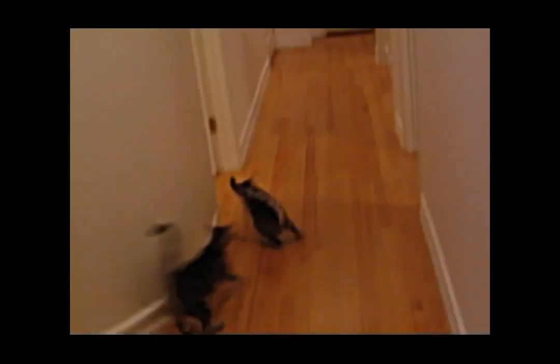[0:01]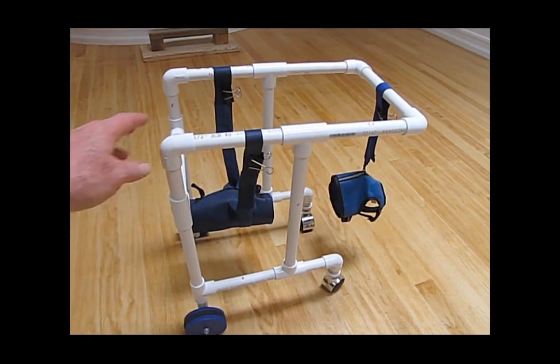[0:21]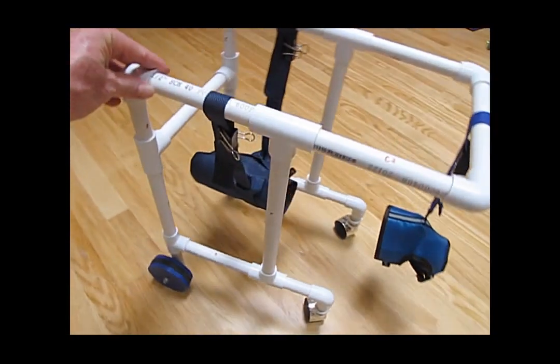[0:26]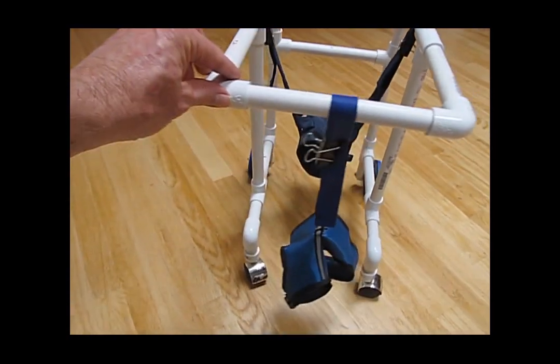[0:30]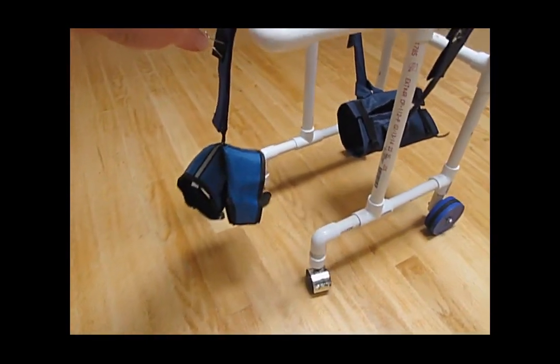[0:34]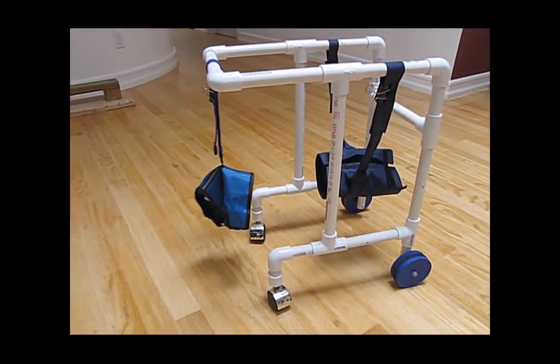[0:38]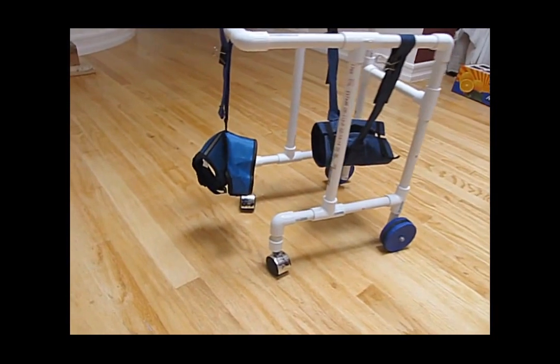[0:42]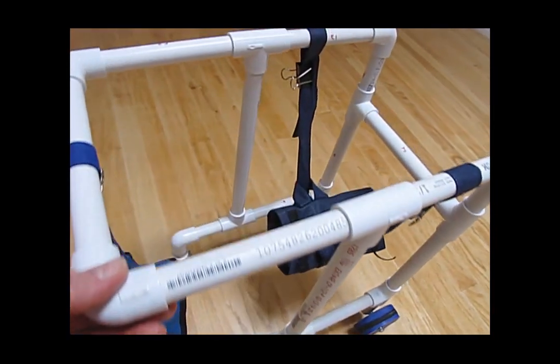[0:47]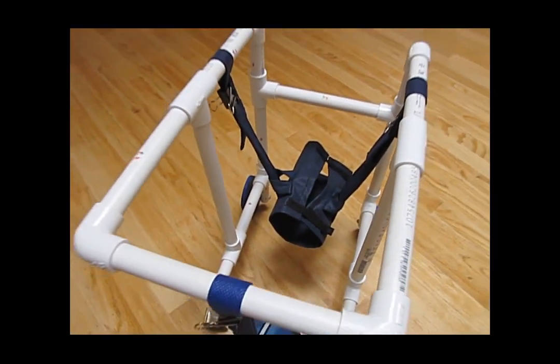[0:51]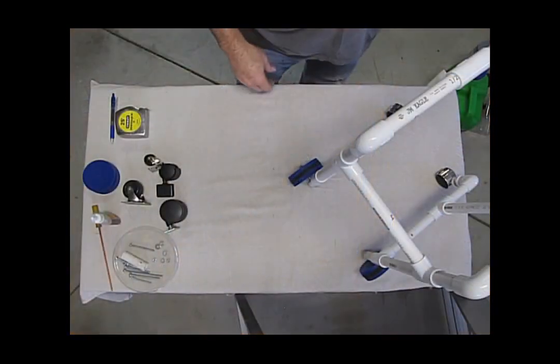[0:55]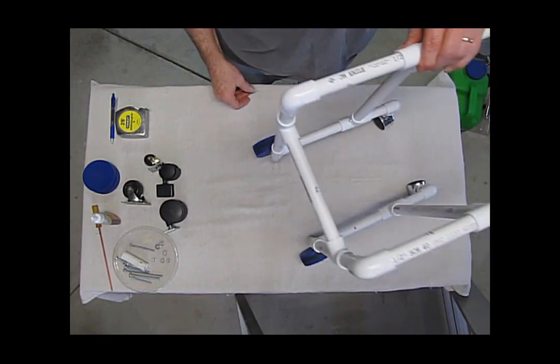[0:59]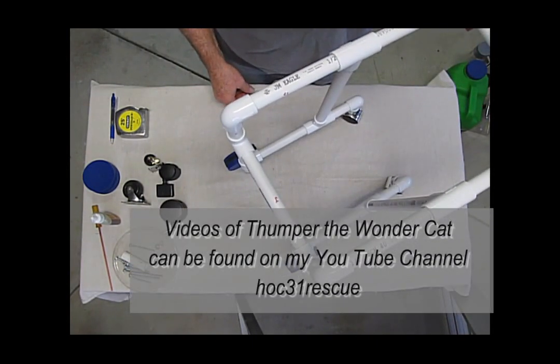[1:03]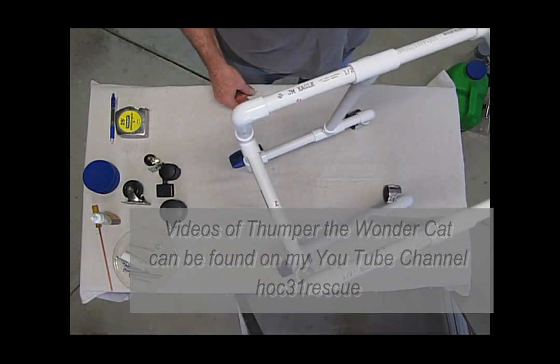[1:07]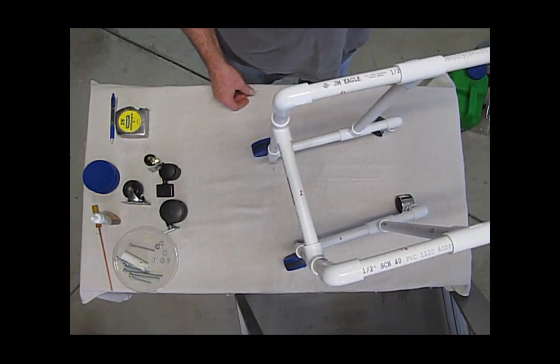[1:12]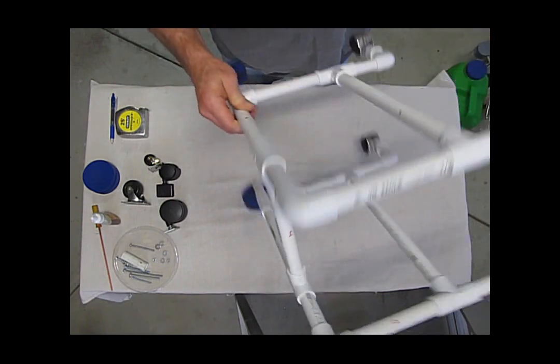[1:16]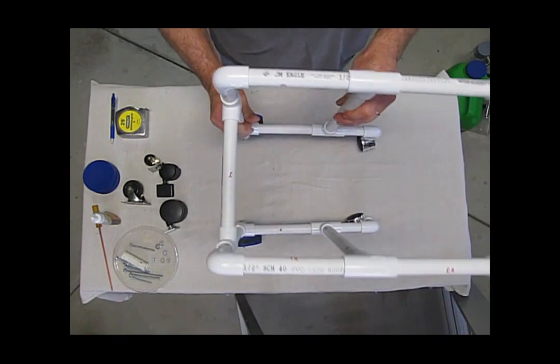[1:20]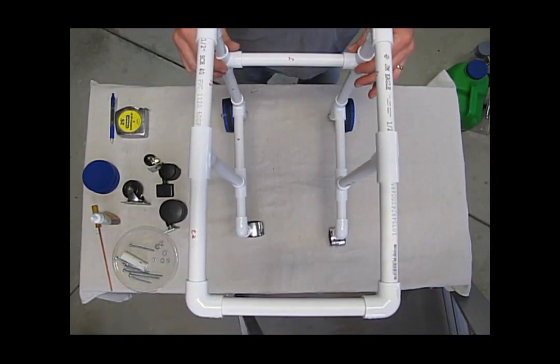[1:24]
The response to my video on how to make the physical therapy walker for the kitten, Thumper the Wonder Cat, was tremendous. But I did get a lot of emails from people with adult cats that had disabilities. They needed a larger version. So this video is going to go over some of the finer points of this larger version of a walker that can be used for adult cats. It's sturdier and just all around it's a much larger piece.
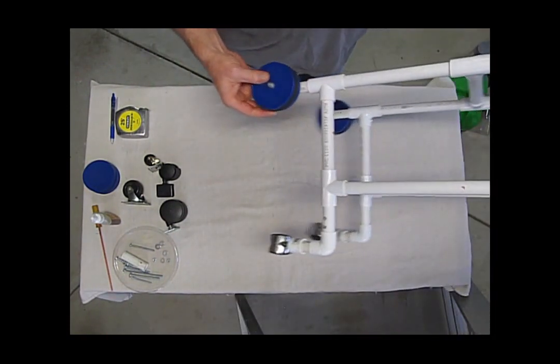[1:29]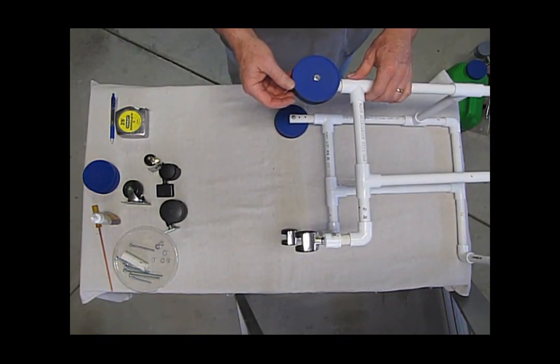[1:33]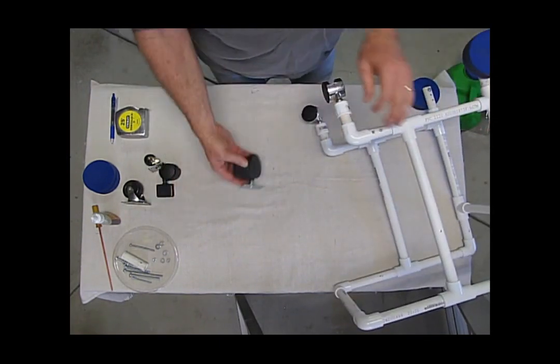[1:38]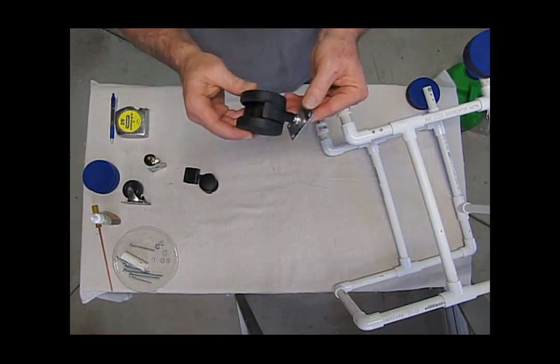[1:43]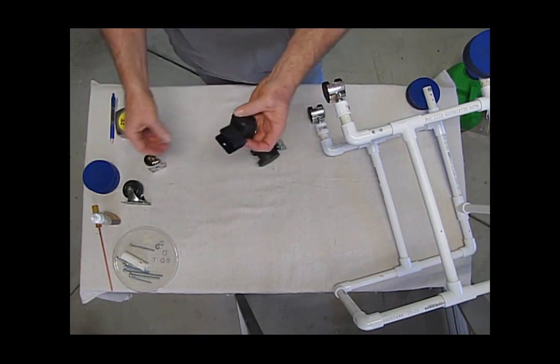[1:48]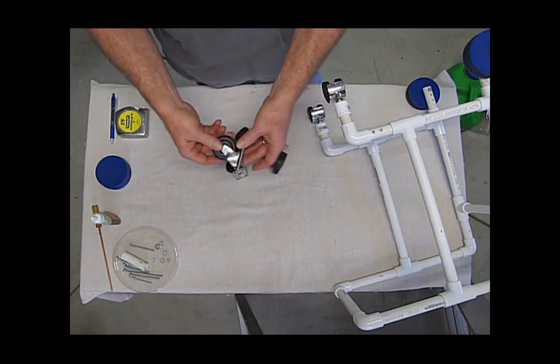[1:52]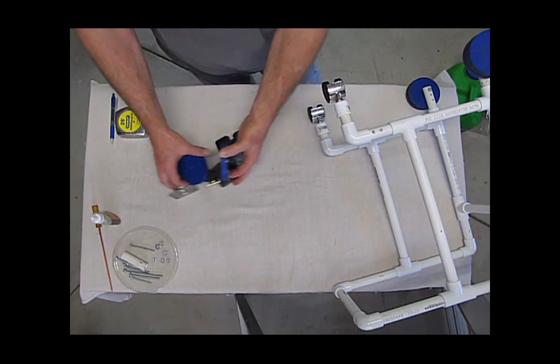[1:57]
I want to go over some of the points like the wheels. I would like to keep everything very simple. So in my case I used wheels from the lid of a litter jug, but wheels could come from anywhere. Here's some casters. I think I picked them up at a thrift store. You can get them at a hardware store. You can take them off old furniture that you're going to throw away. There's large ones, there's small ones. Harbor Freight, Home Depot, Lowe's. I used something as simple as the lids from a jug of litter.
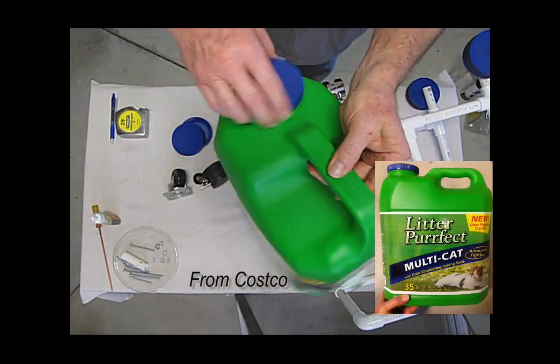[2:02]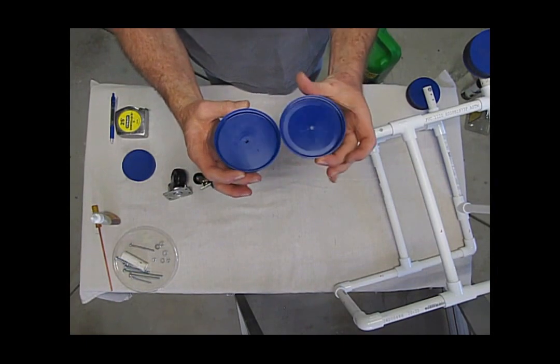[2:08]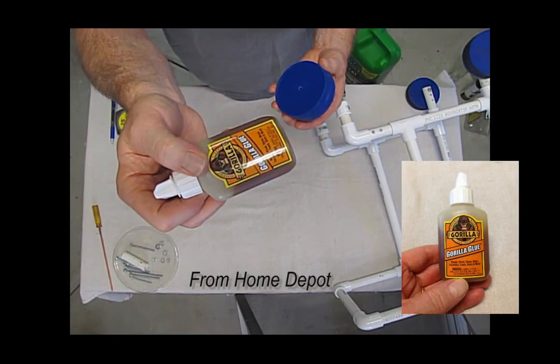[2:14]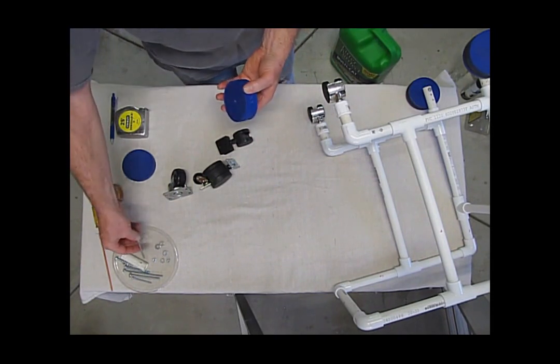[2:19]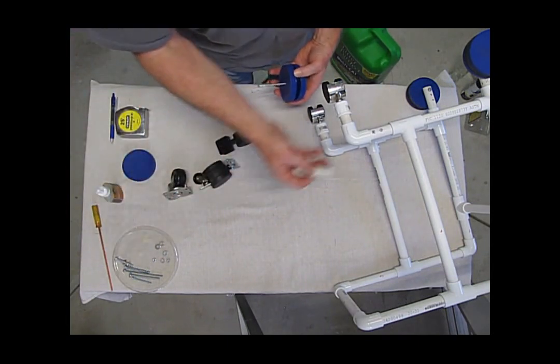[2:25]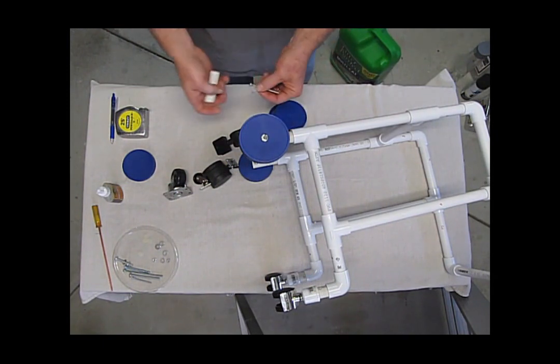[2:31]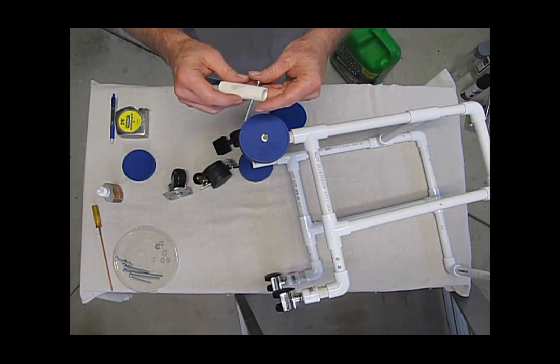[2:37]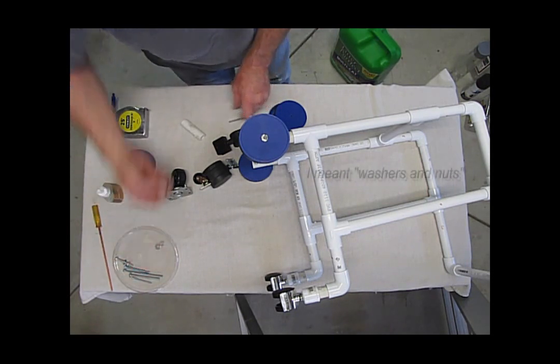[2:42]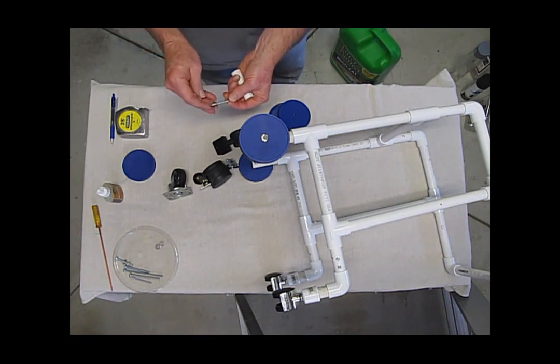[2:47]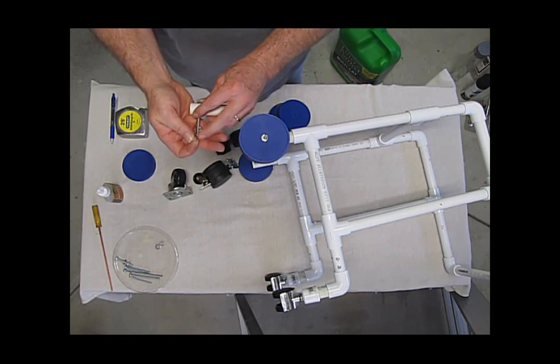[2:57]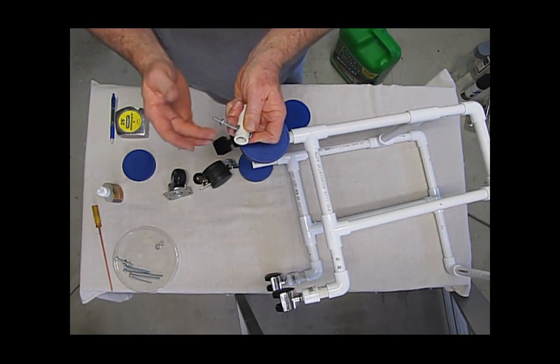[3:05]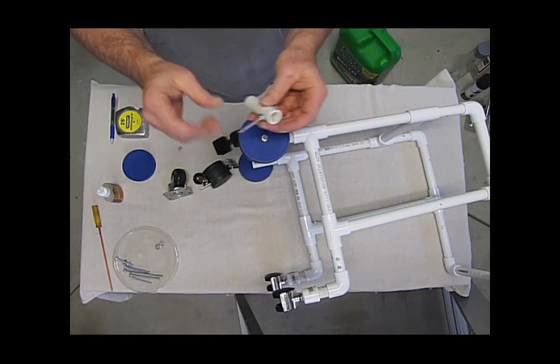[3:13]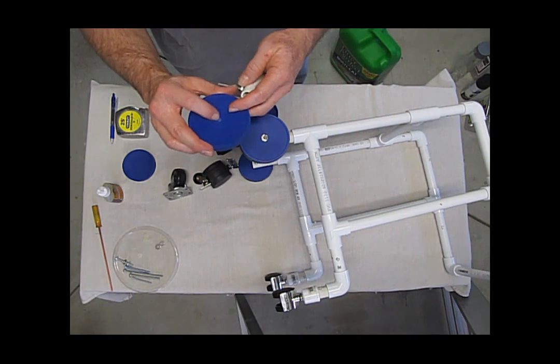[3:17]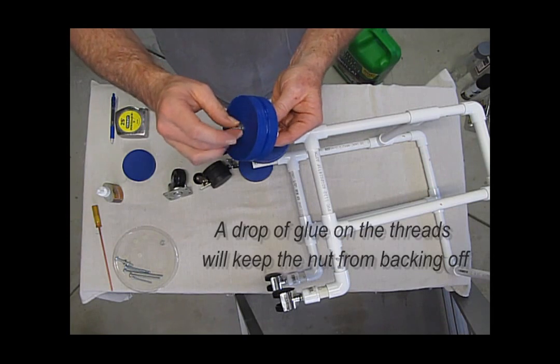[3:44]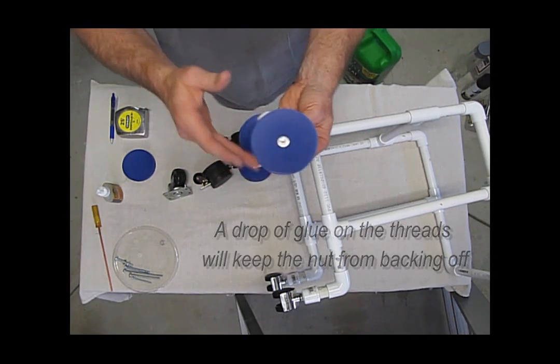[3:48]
What you want is to tighten the bolt down to the PVC first. Tighten it down good because the bolt will not turn. Your wheels will actually be turning on the bolt. This hole here, you want to drill it pretty tight fit. In fact, tighter the better. It will open up a little bit once they're glued together. And then put another washer and a nut to hold the wheel on. But you don't want to snug it up. You just want to have it just enough where the wheel can still turn.
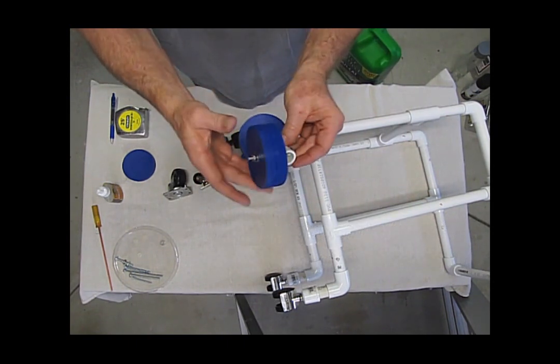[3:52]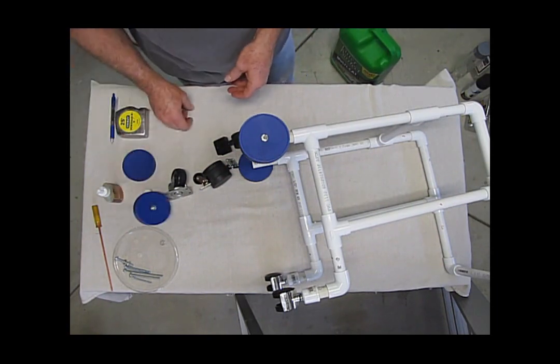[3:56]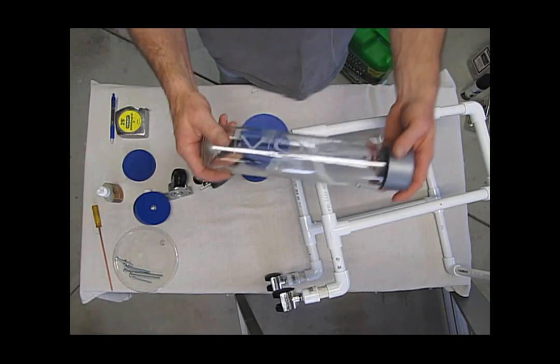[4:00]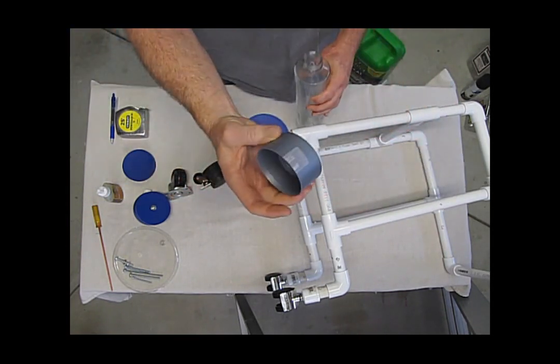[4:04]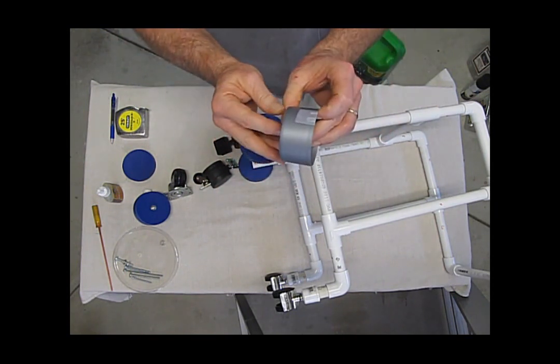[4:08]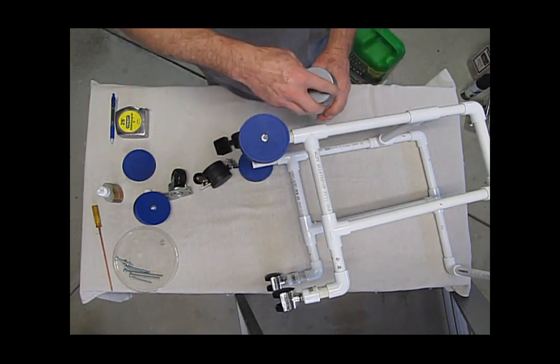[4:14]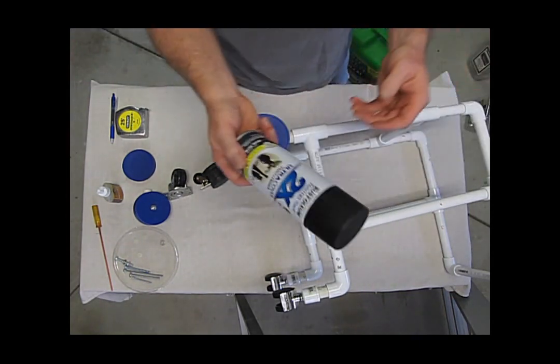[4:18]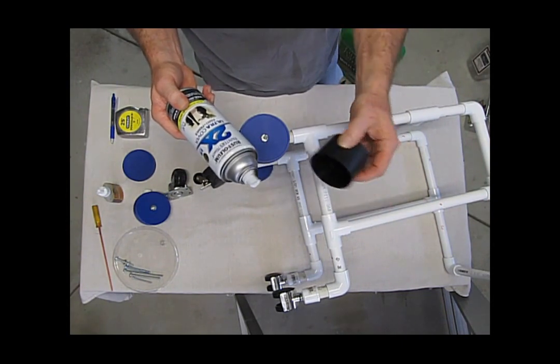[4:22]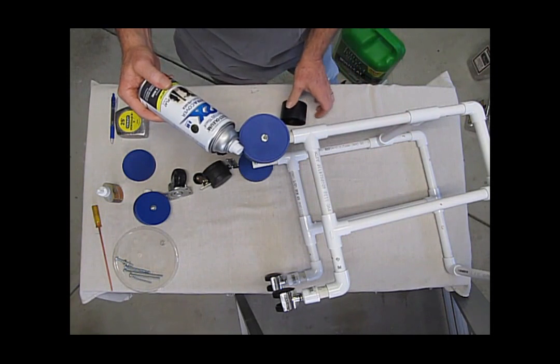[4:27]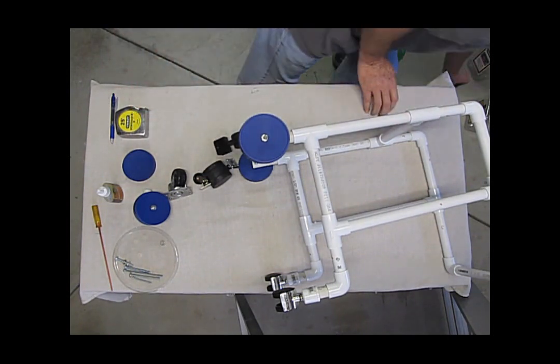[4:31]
Pretty simple. As I said, anything can be used. Voss water bottle. This lid by itself might work just fine. It's fairly sturdy. Put a bolt through that and that'll hold everything just as well. Paint can lid on a paint can, same thing. Considering the weight that you're going to be using, this should be sufficient. Toys from trucks, little toy trucks, the wheels on those would work great too.
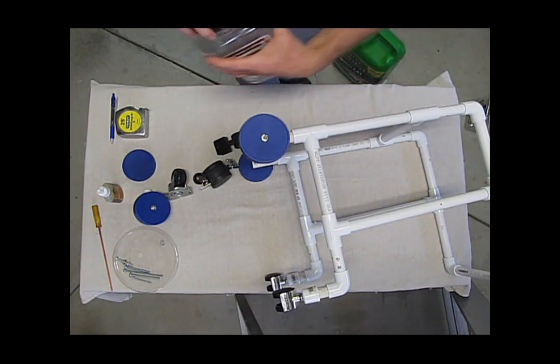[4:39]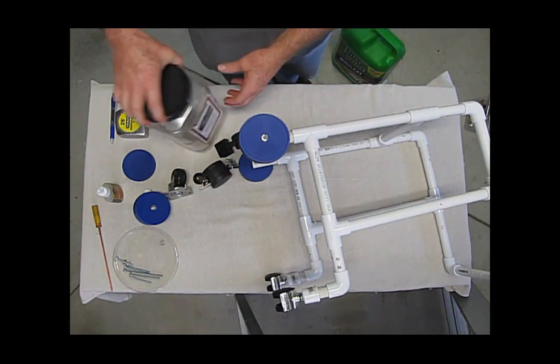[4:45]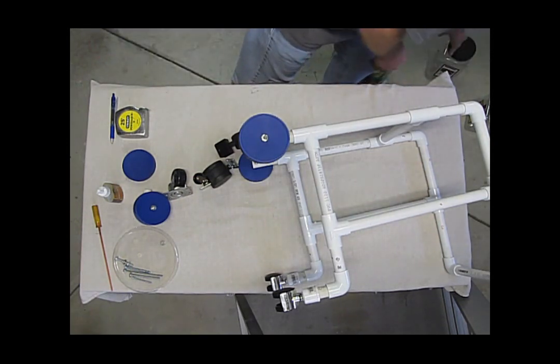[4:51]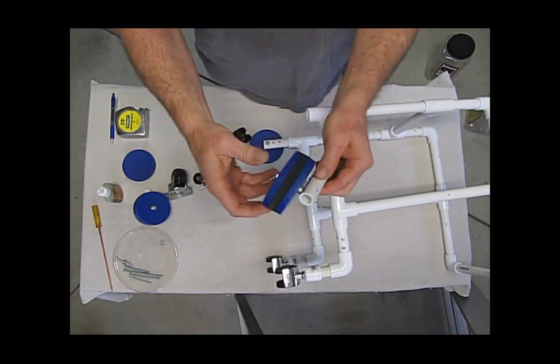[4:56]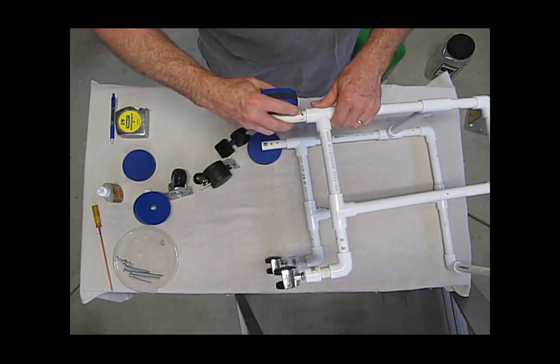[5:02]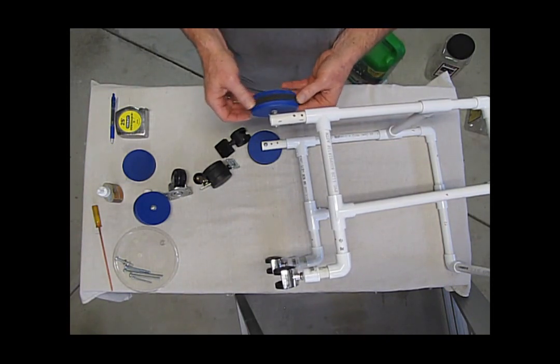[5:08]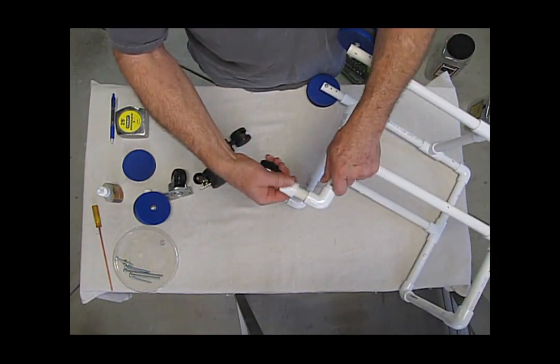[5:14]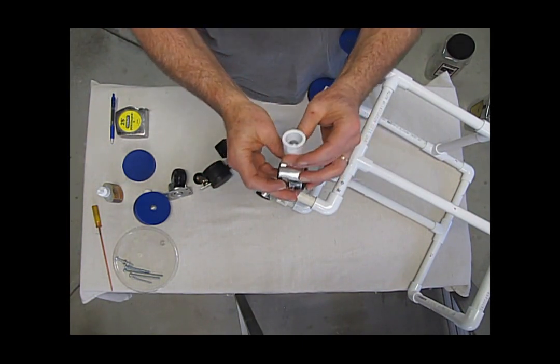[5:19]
Larger lids, same type of idea. You could put two of these lids together. These came from my Costco. Once they're mounted on there, I put a large rubber band on here only for traction, just so that it doesn't slip as much on a hard floor. The front casters, I used casters that had a single post that I was able to drill
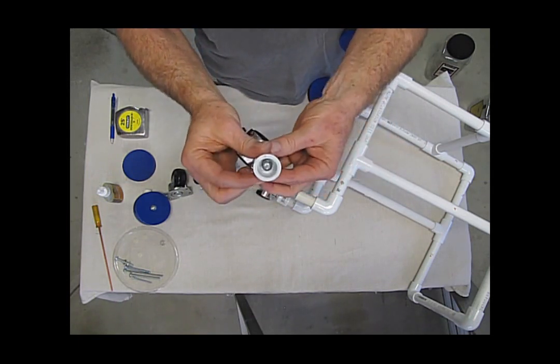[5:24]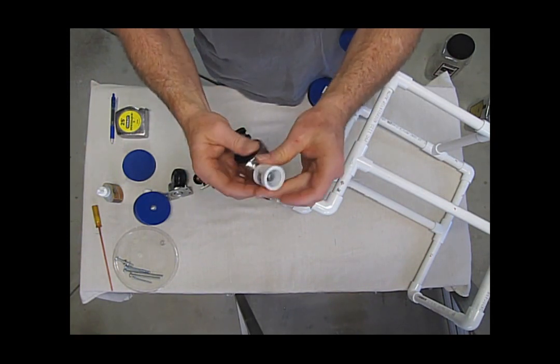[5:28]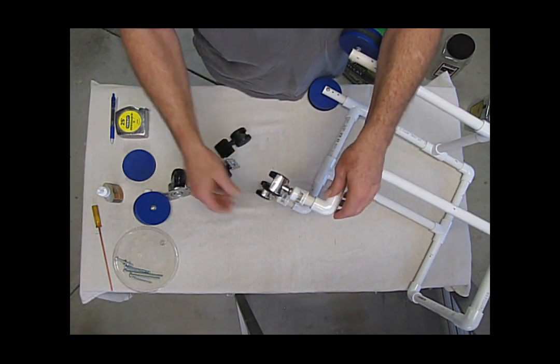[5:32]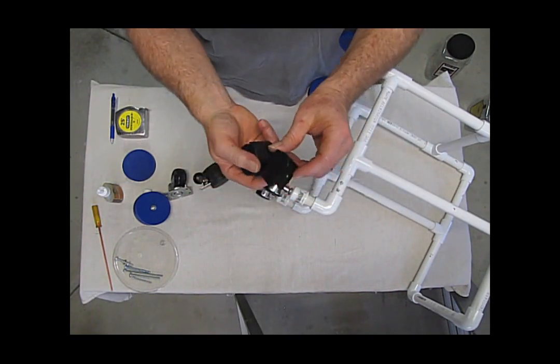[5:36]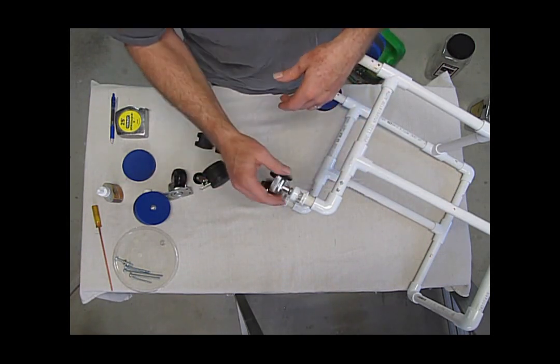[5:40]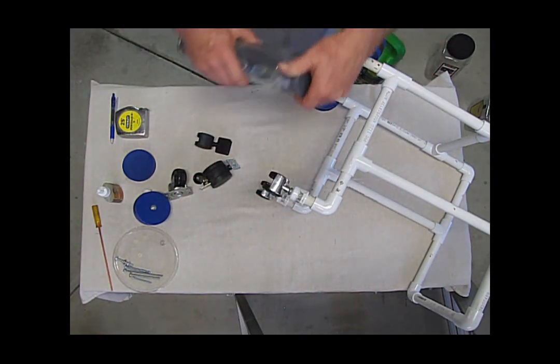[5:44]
a 1/2 inch cap and then press fit the caster post through the cap. But you could have just as easily used other types of casters. You're just going to have to come up with a different method of attachment. Again, the lids could be used as a front wheel.
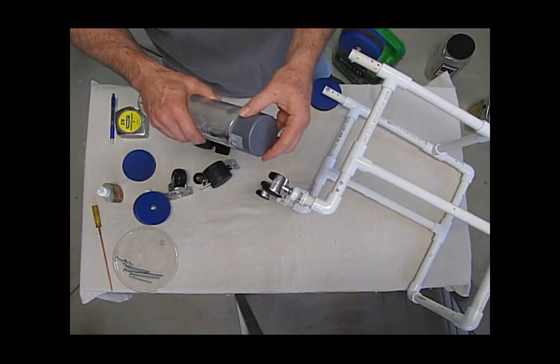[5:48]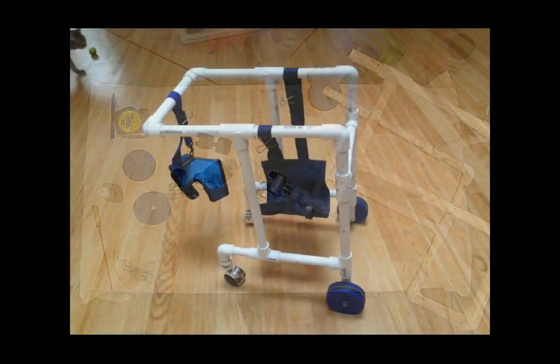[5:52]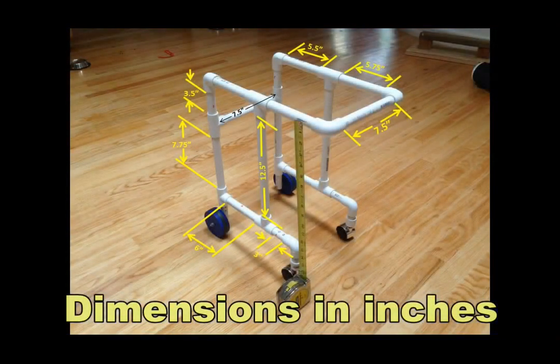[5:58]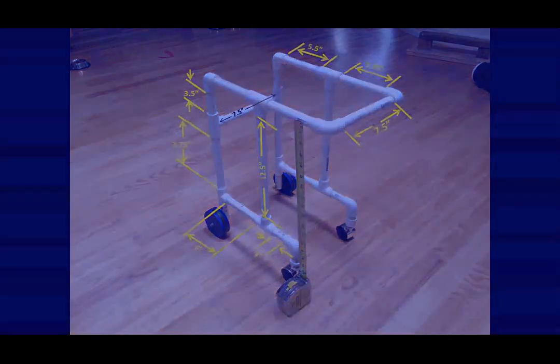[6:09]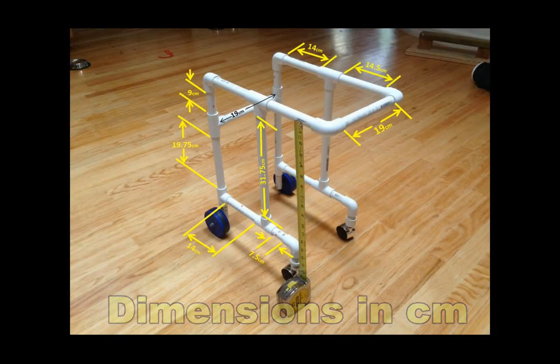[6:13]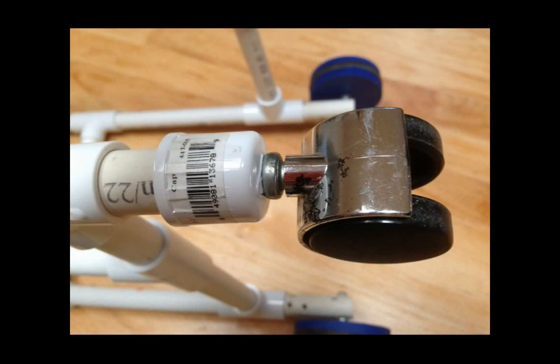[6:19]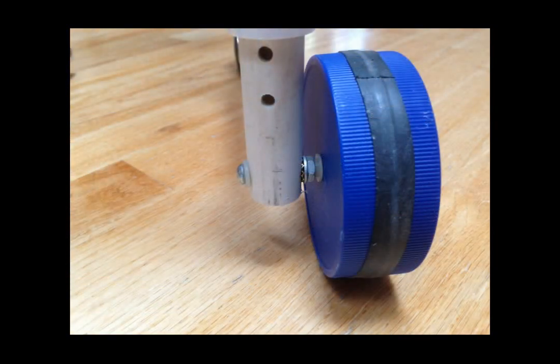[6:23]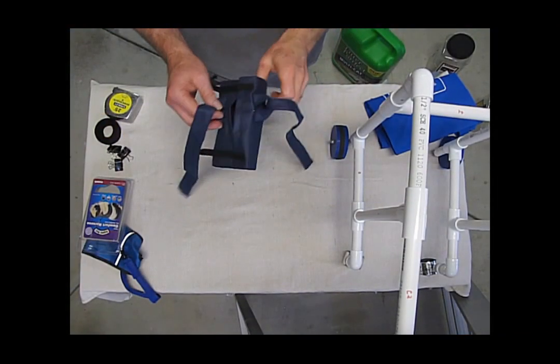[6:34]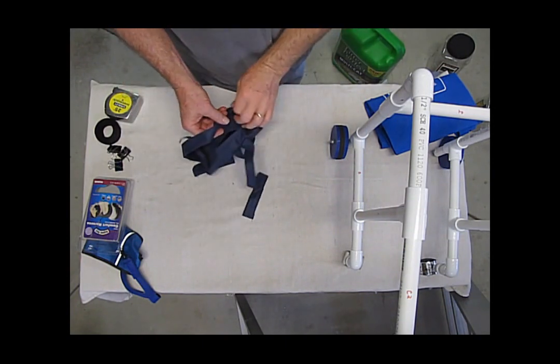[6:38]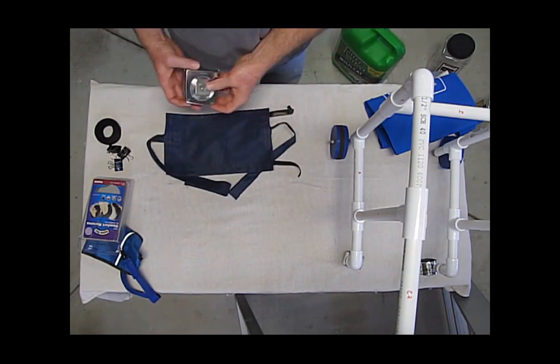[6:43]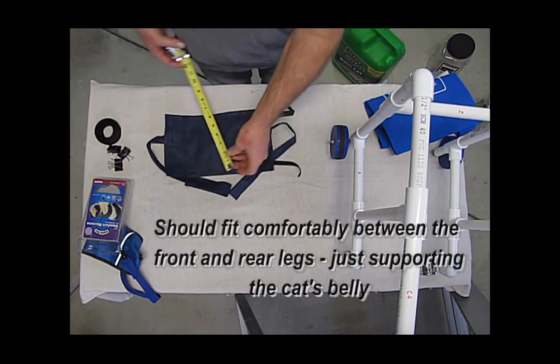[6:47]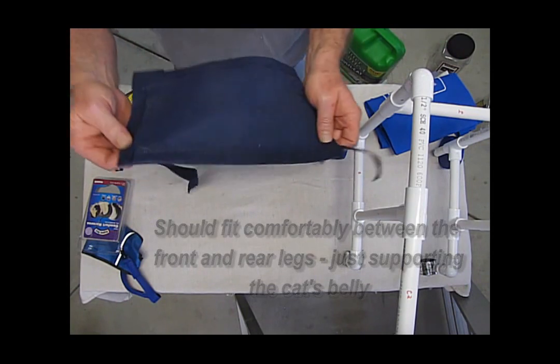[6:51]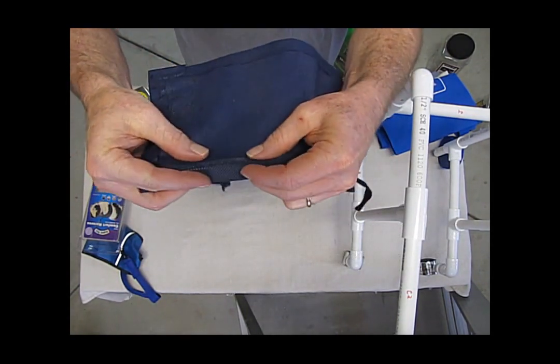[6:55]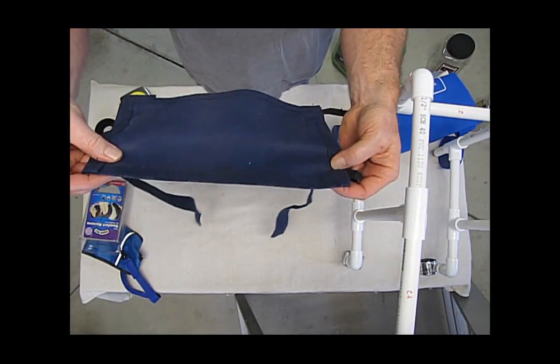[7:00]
The sling for the cat is very simple in design. It's nothing more than a rectangular piece of material. In this case, I just estimated the size of the cat. I made this 11 inches by approximately 7 inches. I made it a little bit larger, and then I hemmed the edges. I folded it over and sewed the edges just so that you had a smooth edge all the way around.
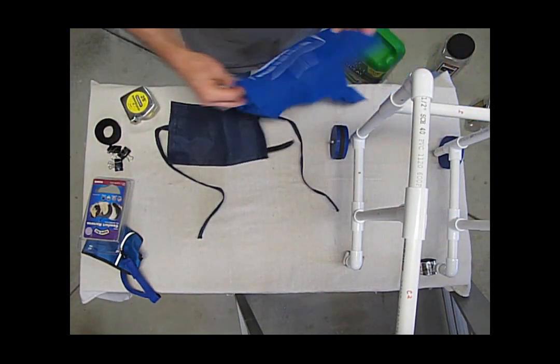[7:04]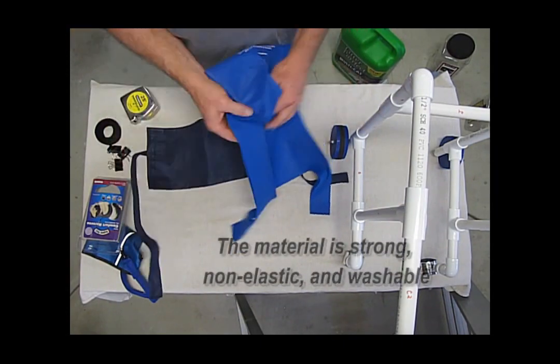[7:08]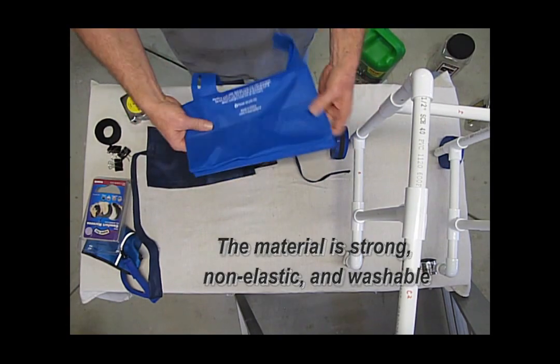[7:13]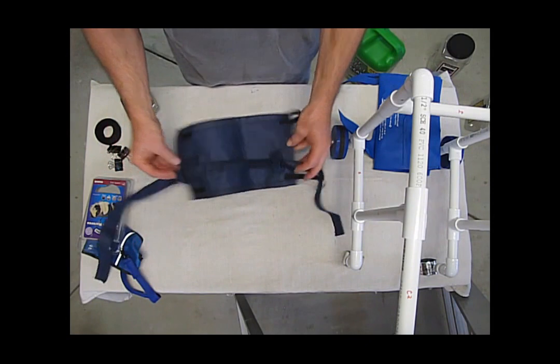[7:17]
I cut the material from one of these free grocery bags. I'm not sure where this one came from, but Walmart's got them. Pick them up at different places. You can get them for $1. You can get them at thrift stores for free sometimes if you buy something.
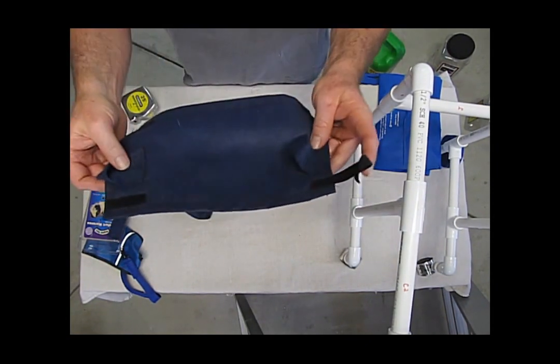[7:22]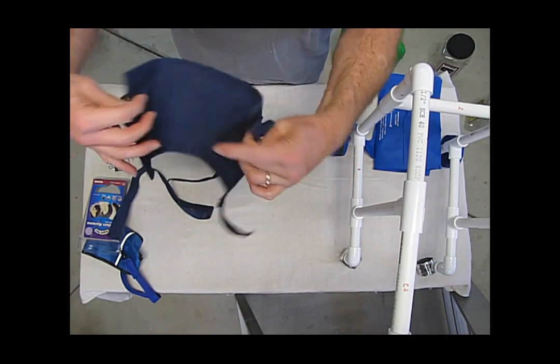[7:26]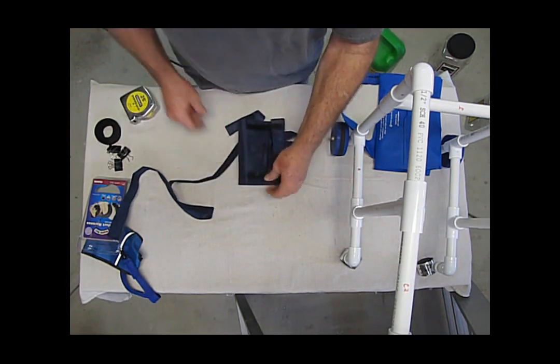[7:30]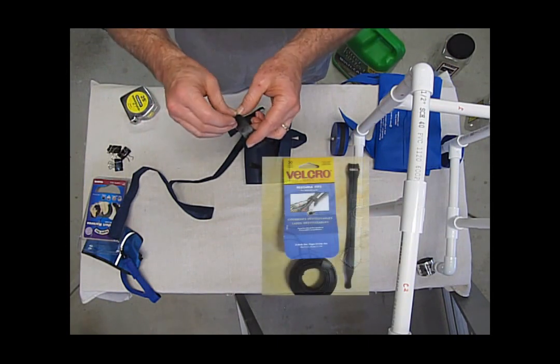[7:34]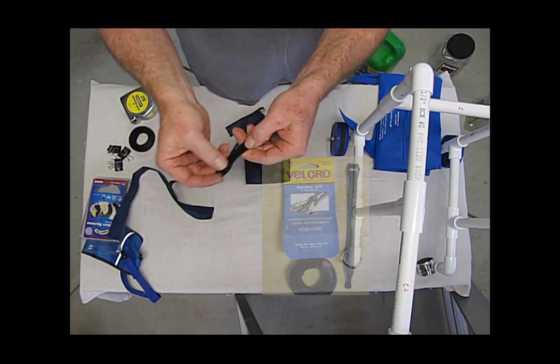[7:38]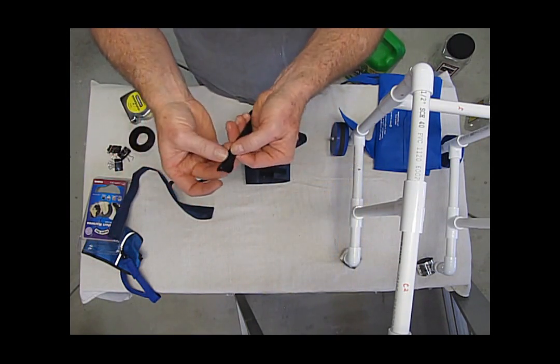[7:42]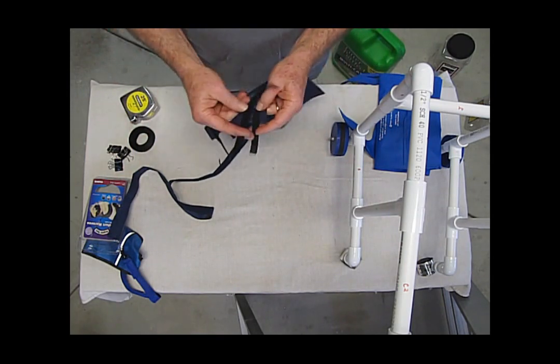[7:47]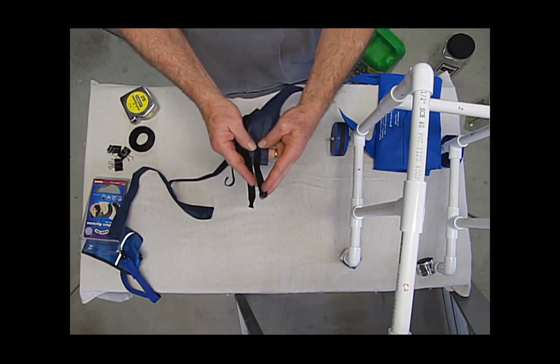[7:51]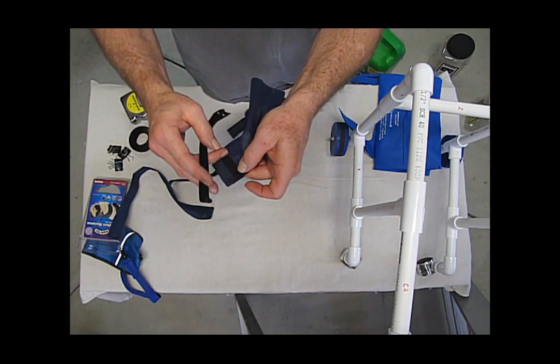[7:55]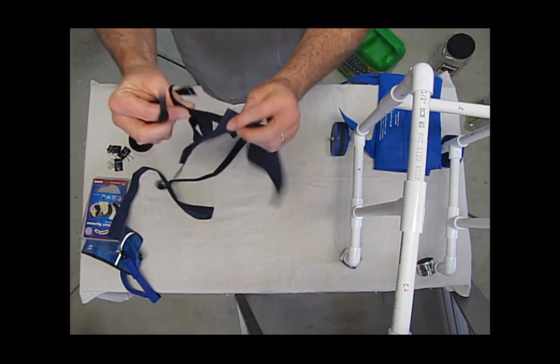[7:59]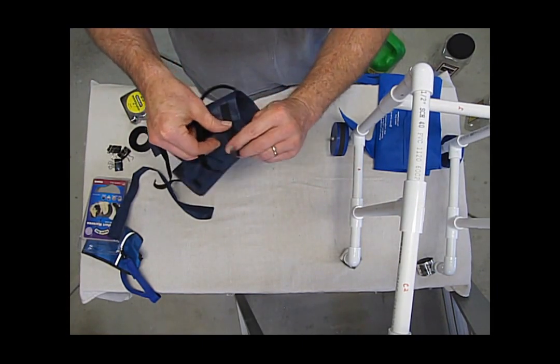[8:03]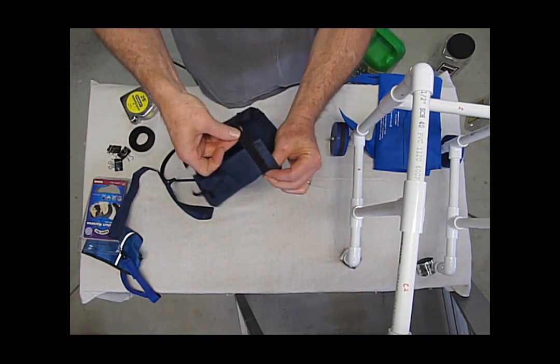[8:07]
I have 2 pieces of Velcro that hold it together and it can be adjusted. This Velcro, Home Depot. You can get a roll of these little Velcro straps. They're made to hold wires together. It's hooks on one side, loops on the other side. I just snip off this end, stitched it onto the sling, and another piece stitched on this. The loops are stitched on this side, and on this side is the hook, so that once it comes around the cat, you can adjust it to pretty much any size you want.
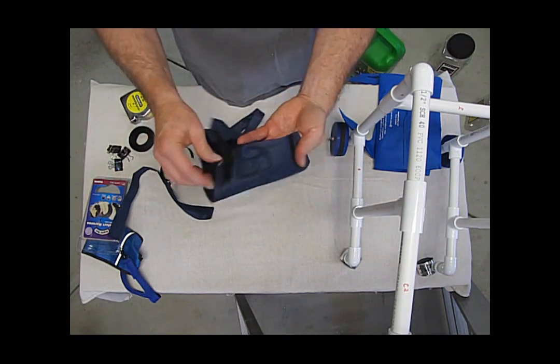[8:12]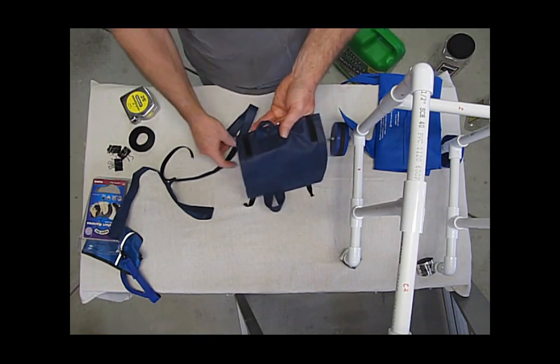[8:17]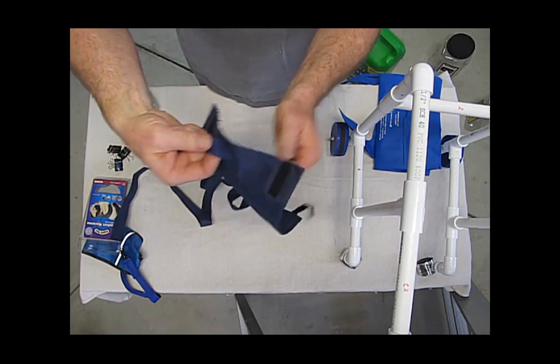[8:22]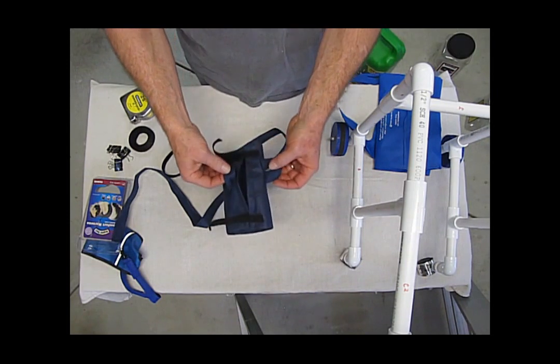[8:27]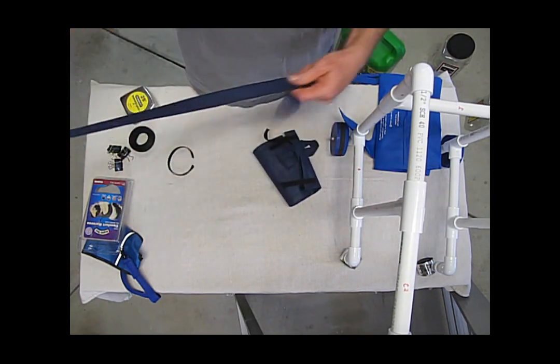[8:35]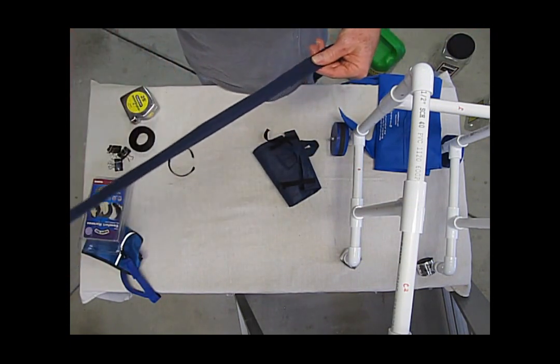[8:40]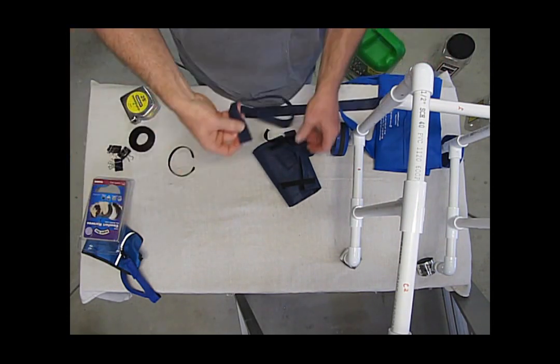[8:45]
It doesn't have to be tight. These loops I made from just a piece of the material, cut, stitched on there so that you've got a loop. I put it off centered just so sometimes it might fit better towards the hind end of the cat or towards the front of the cat. And then the strap that actually holds the cat up, this happened to have been the handle from the bag. I just cut it and stitched it together.
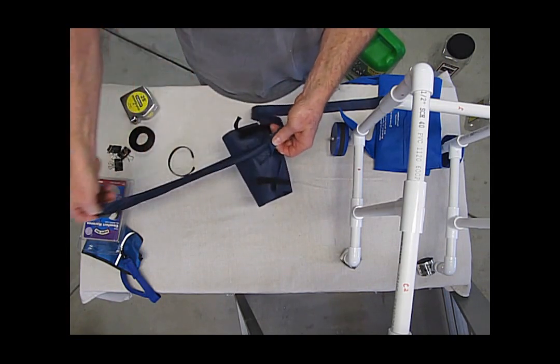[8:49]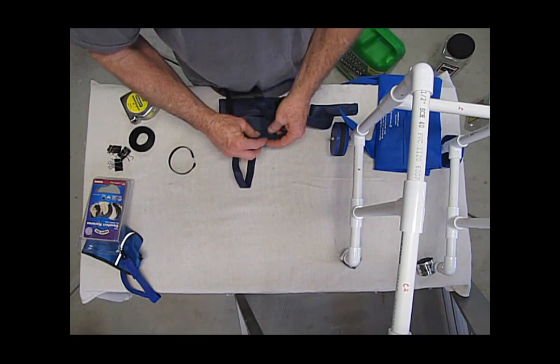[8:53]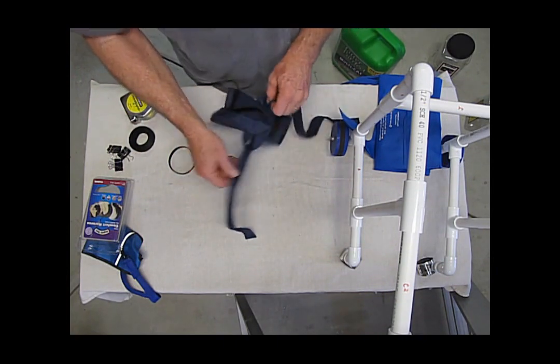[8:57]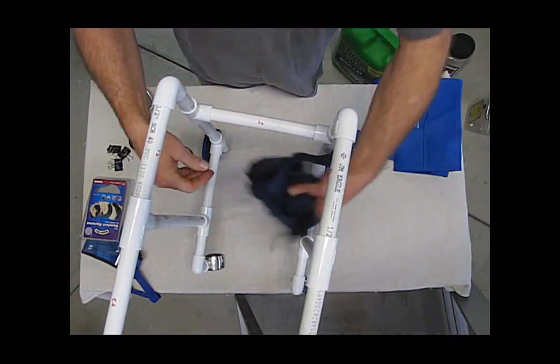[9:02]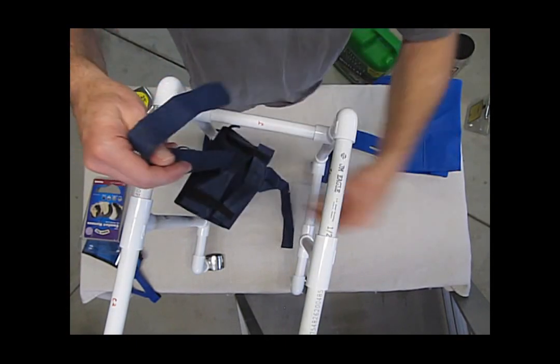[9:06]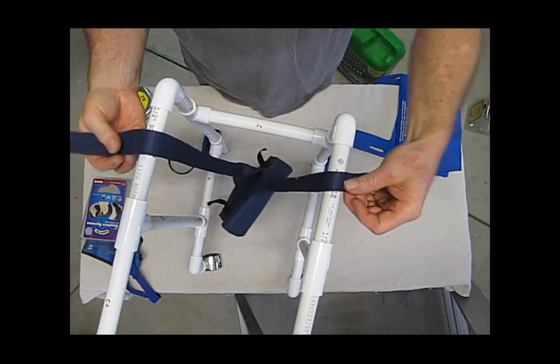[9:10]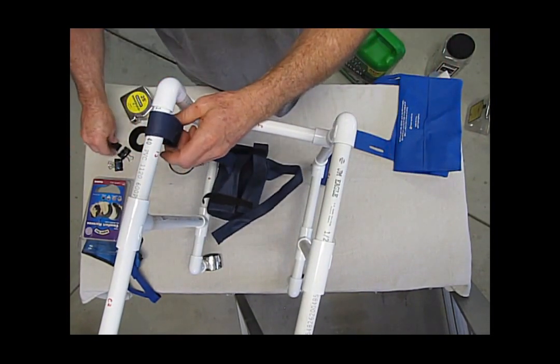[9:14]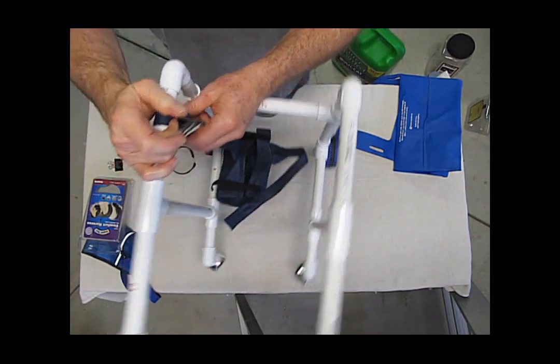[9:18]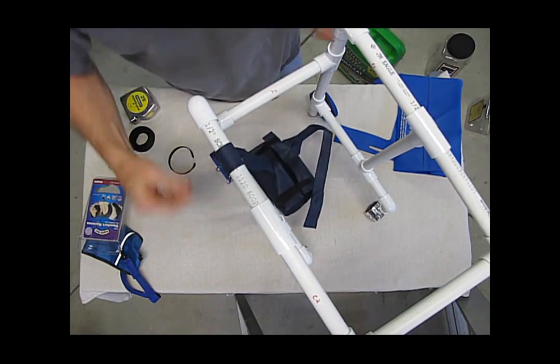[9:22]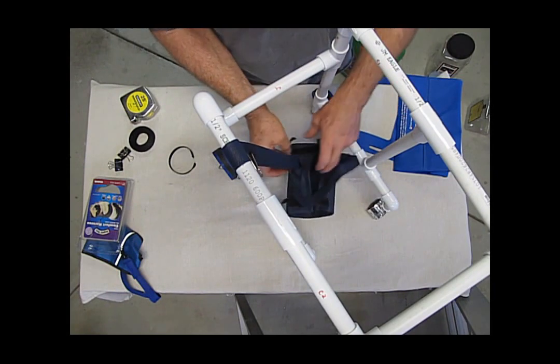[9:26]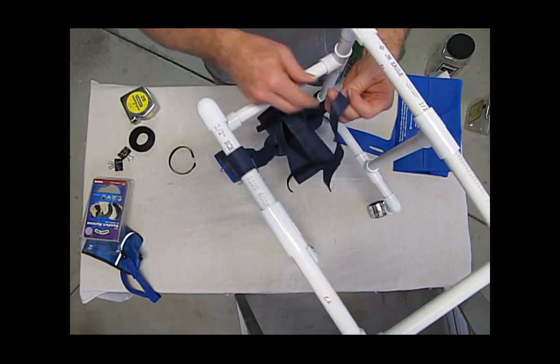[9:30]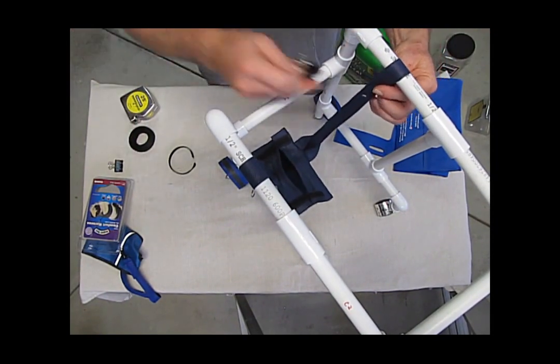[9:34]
Feed the strap through, around, underneath, through the loop again. And over the rails. And height wise, depends on your cat. What I use, simple clips. I can put it anywhere I want. They don't come undone. It works just fine. You can adjust the height so that the cat's feet are just touching the ground, so that its weight is supported by the sling.
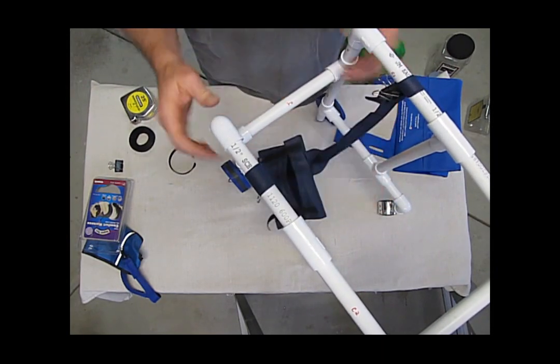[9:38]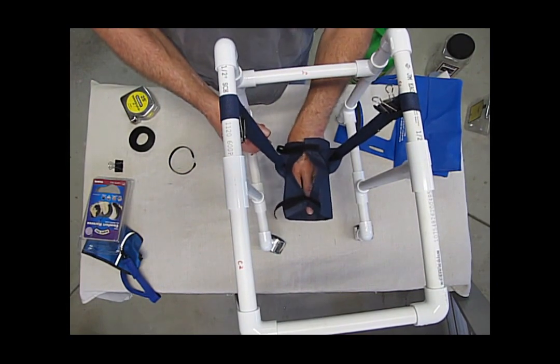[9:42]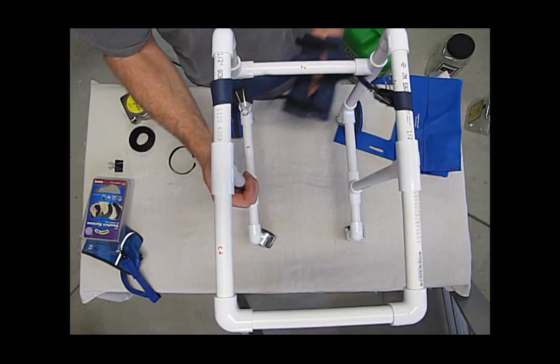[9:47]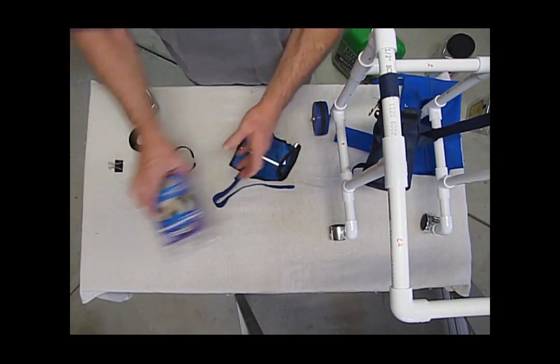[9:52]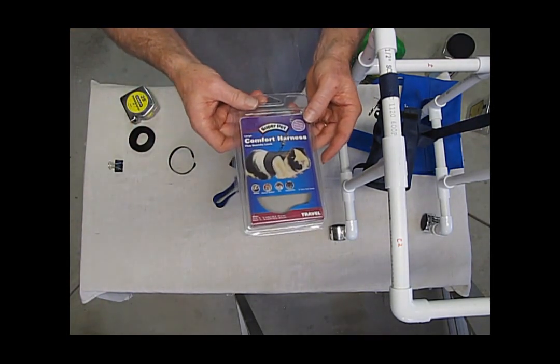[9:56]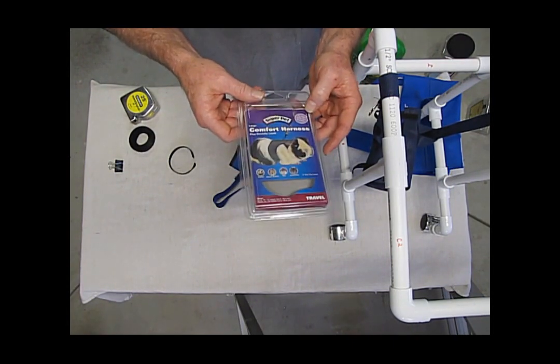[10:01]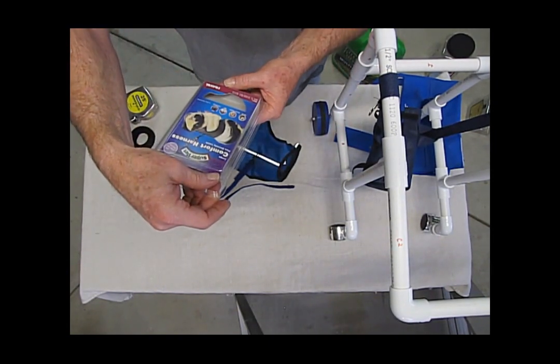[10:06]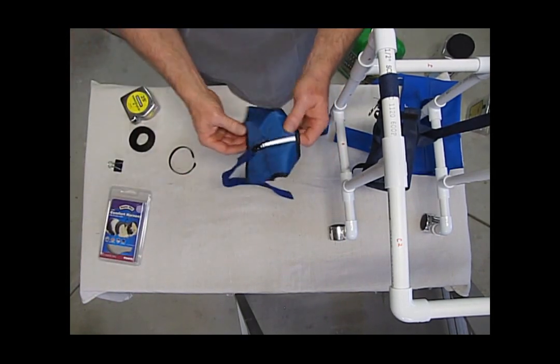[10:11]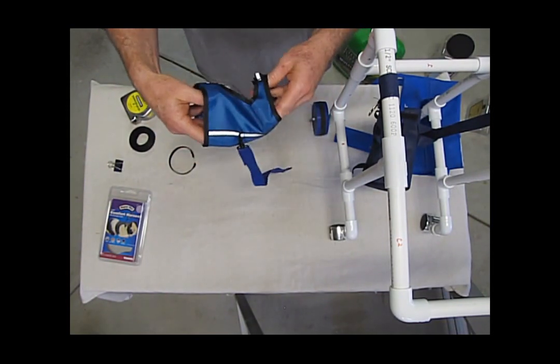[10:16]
The sling only supports the weight of the cat. That's about it. If you use only a sling, the cat can literally walk out of it. So that's why there's the need for a harness. And for an adult cat, I used this comfort harness, a Super Pet comfort harness. It's large. They come in multiple sizes. This one is for ferrets, dwarf rabbits, rats, chinchillas. It just seems to be better than most of the cat harnesses. I'm sure they have cat harnesses out there, but I think they might even be more expensive. This is the only thing that was really store-bought.
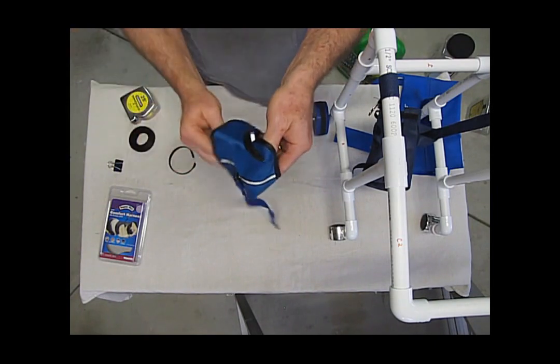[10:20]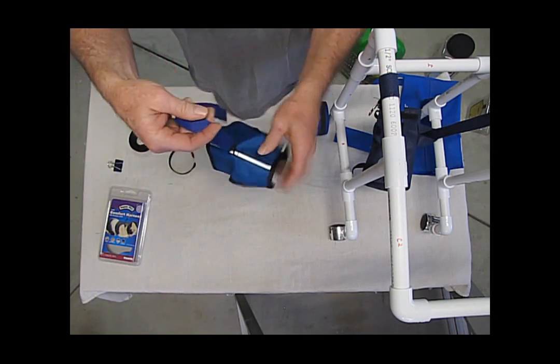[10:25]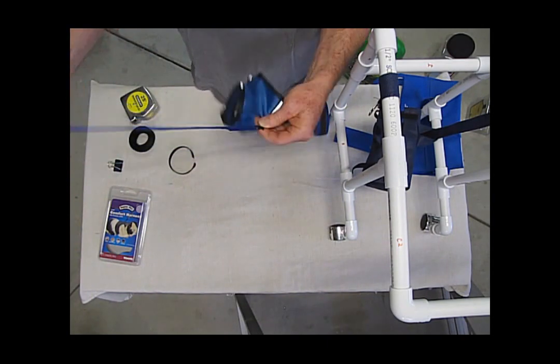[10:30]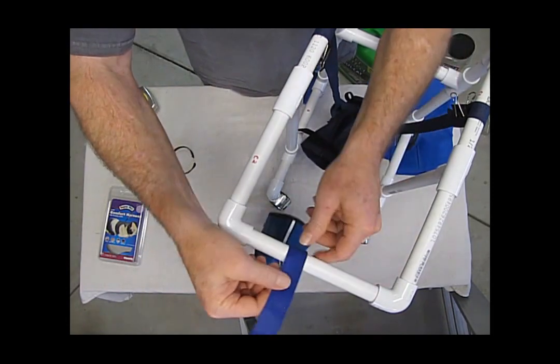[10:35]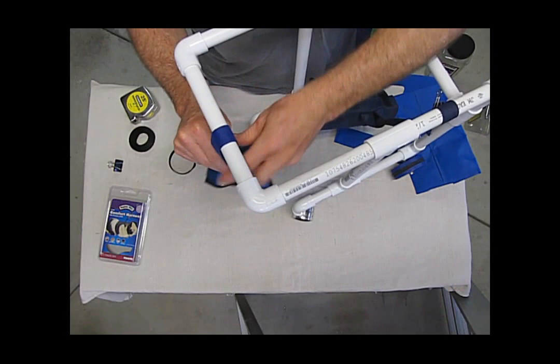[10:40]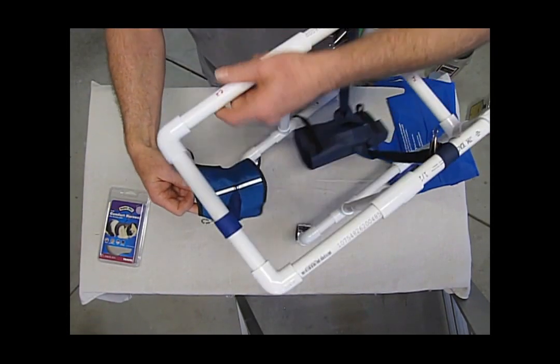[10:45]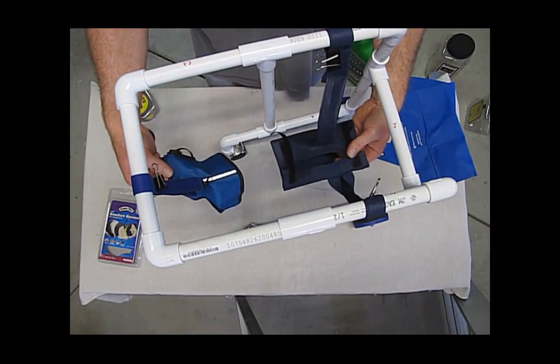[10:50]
This goes around, of course, the shoulders, behind the front legs, and there's a loop at the top. And again, I made another strap. It comes with a leash, but I didn't like it, so I just made my own strap here. Same thing. Adjust to the height of the cat so it's comfortable. So use a clip, and now your cat is suspended such that it can walk without any trouble now.